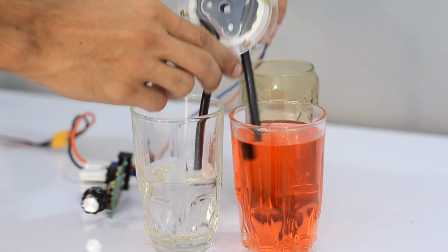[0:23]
In today's project video we are going to build ourselves a peristaltic pump by using commonly available hardware, so that we can reduce its cost and improve its effectiveness as well. So have a look at how cool this little pump is, and later on I'm going to show you how we can build one for ourselves. So let's get into the video.
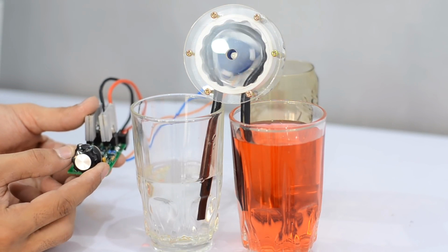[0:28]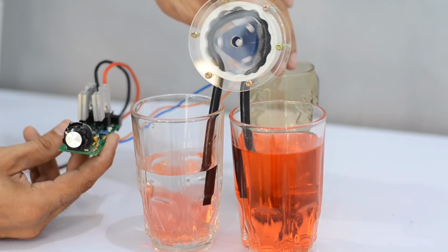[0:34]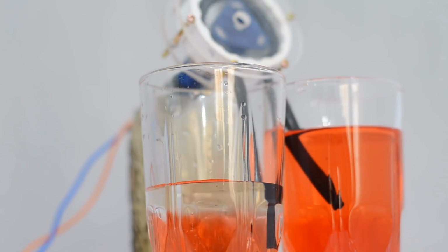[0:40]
A peristaltic pump moves fluid by mechanical constriction along a rubber tube, causing the fluid to flow through the tube. This technique is useful when we need isolation between the fluid and the mechanical parts of the pump. Moreover, the fluid can be pumped in either direction with precise control over the amount of liquid flowing through the tube.
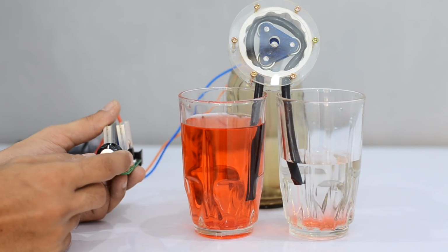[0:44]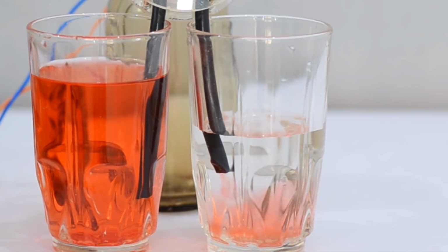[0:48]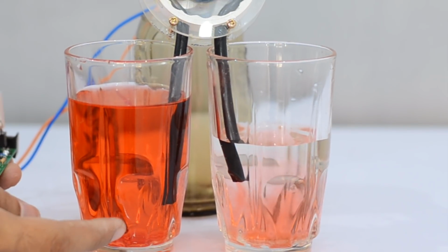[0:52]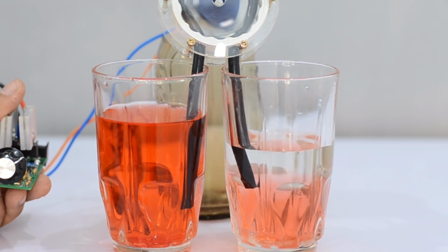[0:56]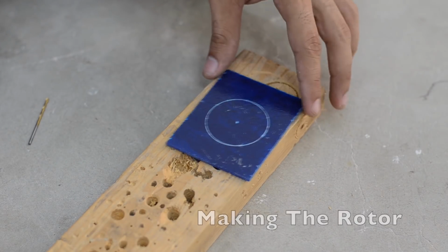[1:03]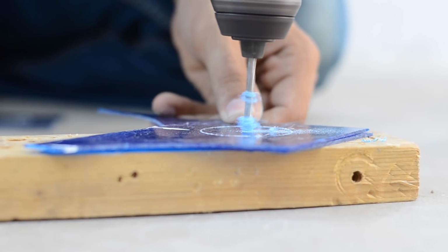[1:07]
I've started by making the rotor using fiberglass sheet. This rotor is going to hold 3 bearings.
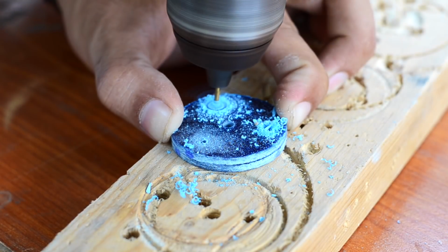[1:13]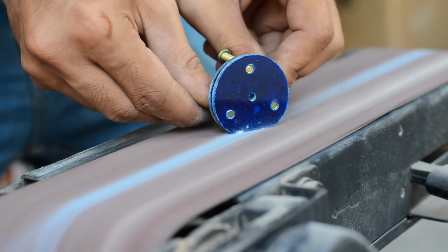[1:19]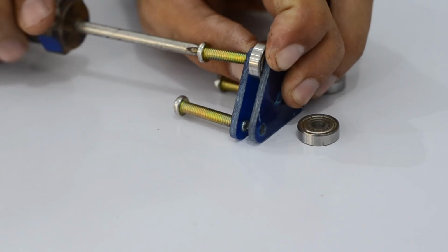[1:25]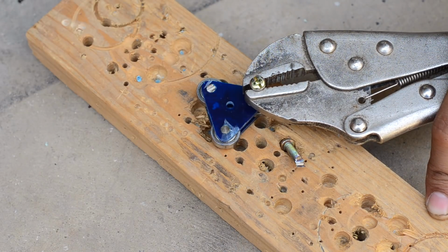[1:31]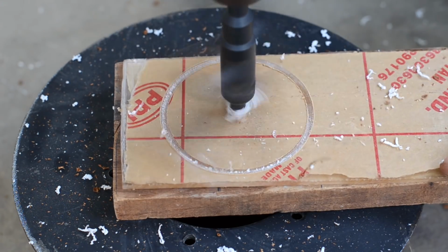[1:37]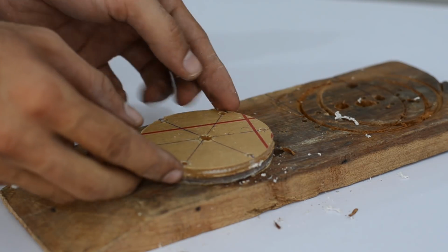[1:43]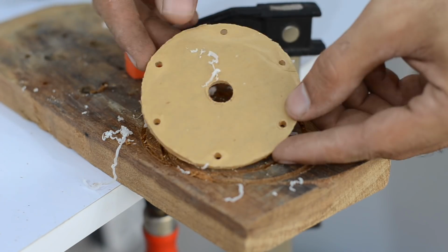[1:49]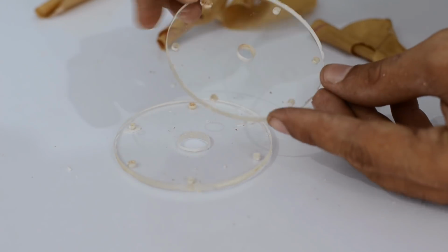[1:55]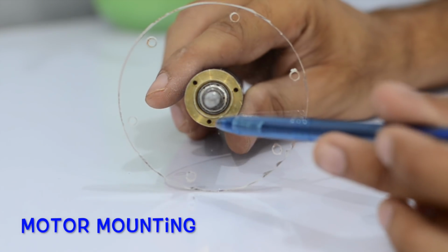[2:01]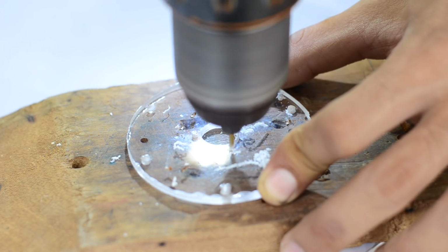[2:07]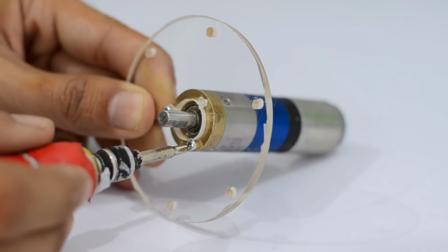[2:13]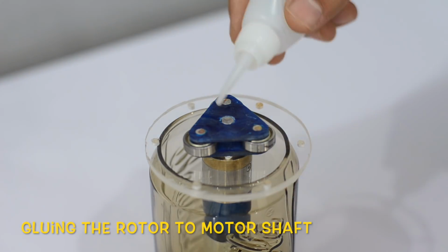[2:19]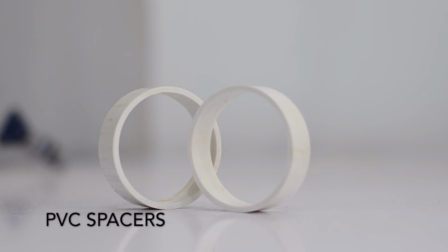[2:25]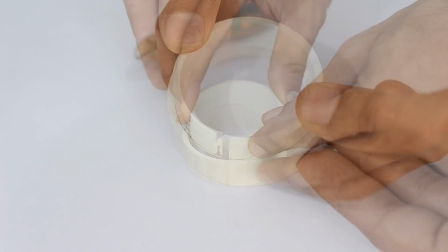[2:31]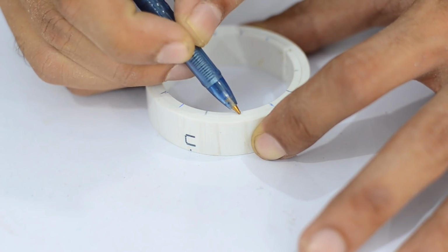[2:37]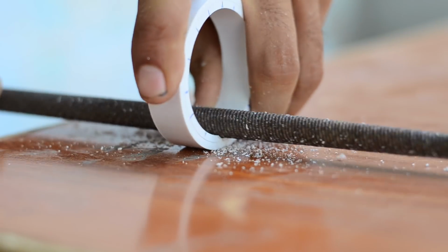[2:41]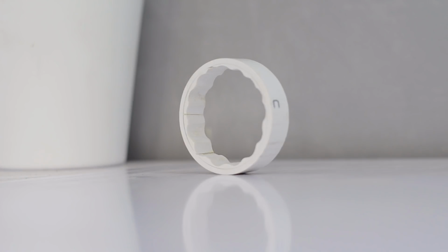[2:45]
To reduce friction between the rotor and stator housing, I've made some grooves on the inner side of the PVC spacers using a file.
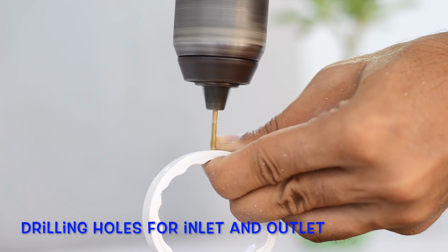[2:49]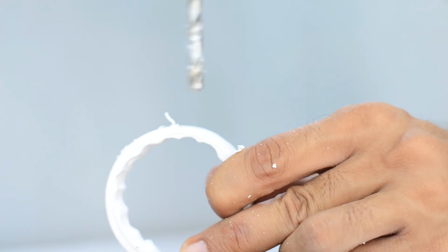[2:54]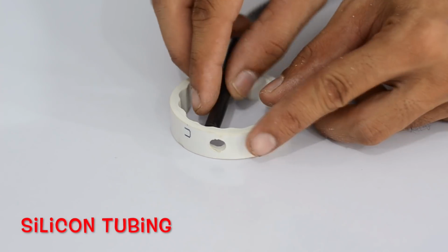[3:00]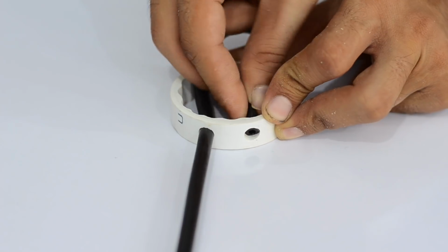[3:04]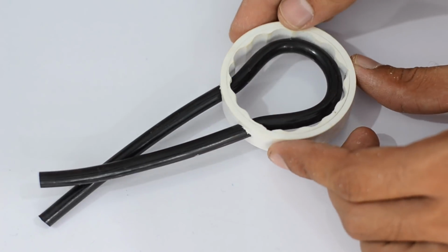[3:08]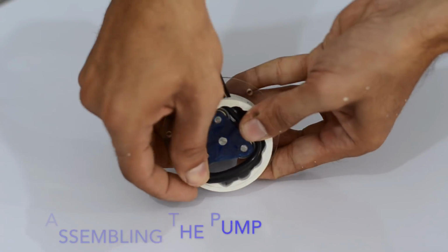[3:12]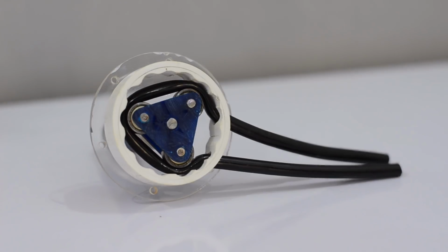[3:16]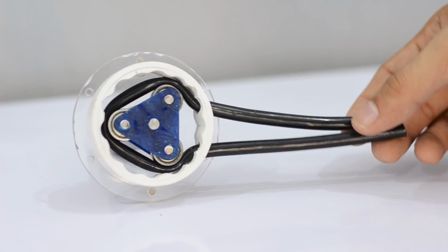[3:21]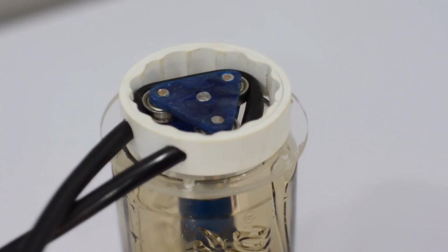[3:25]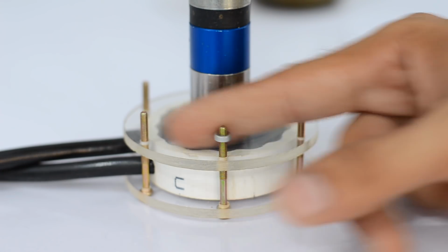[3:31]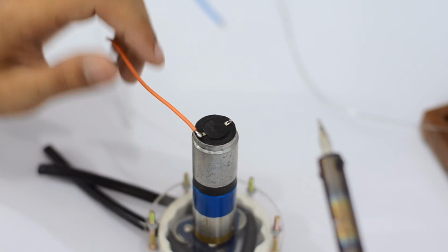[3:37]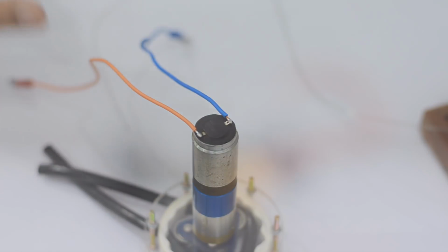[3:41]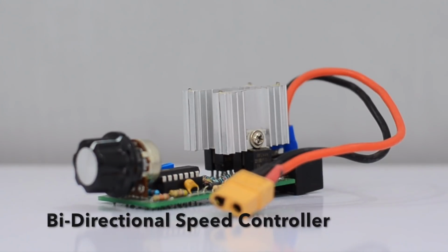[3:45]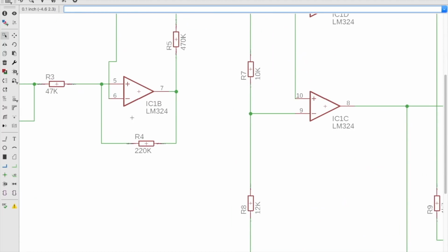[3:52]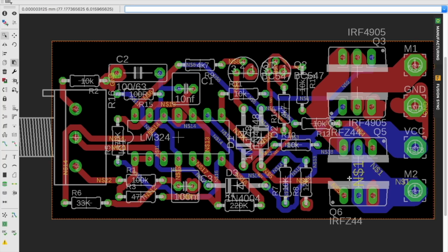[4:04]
To operate the pump in either direction, I decided to build a bidirectional speed controller. I've designed the schematic for a bidirectional speed controller that is based on the LM324 motor driver IC. To drive large amounts of current, I've used N and P channel MOSFETs rather than transistors only. Besides that, to ensure a smooth operation, I've decided to build this speed controller on a printed circuit board rather than building the whole circuit on a perf board.
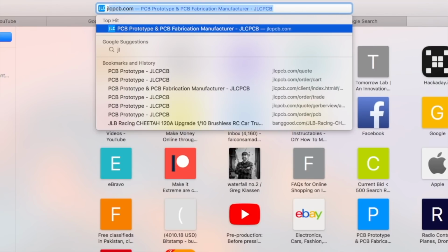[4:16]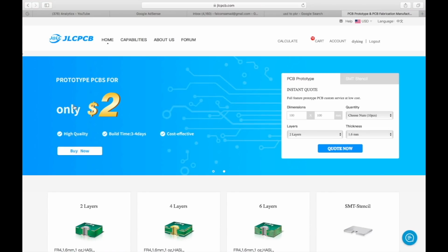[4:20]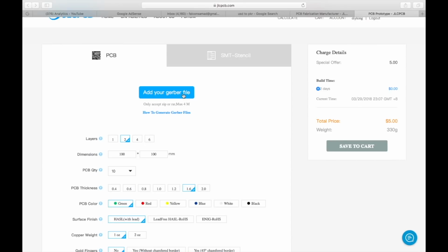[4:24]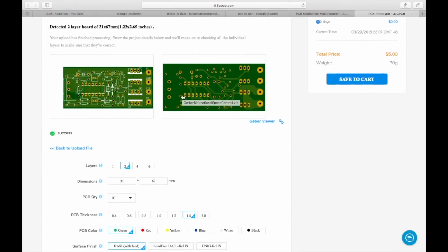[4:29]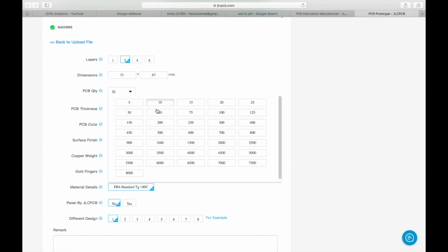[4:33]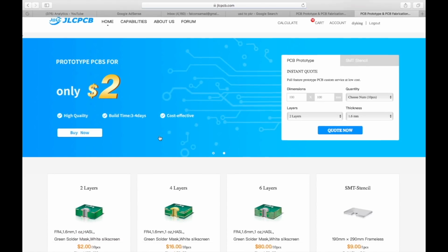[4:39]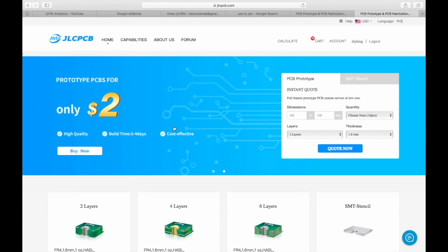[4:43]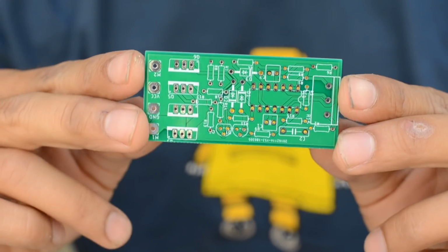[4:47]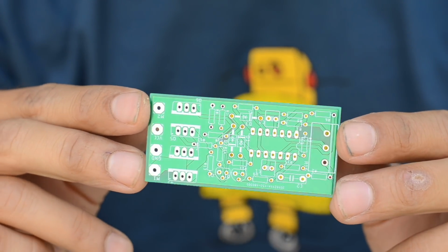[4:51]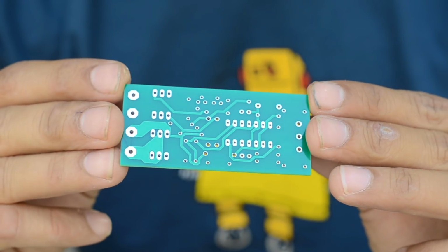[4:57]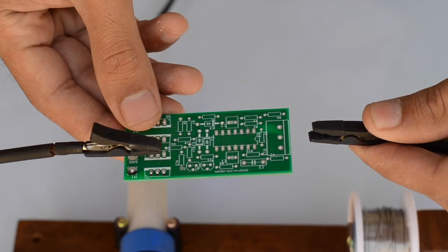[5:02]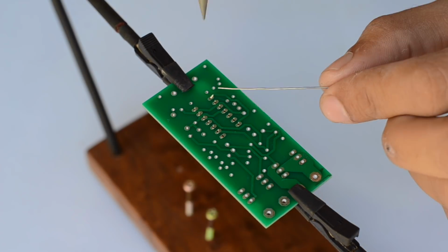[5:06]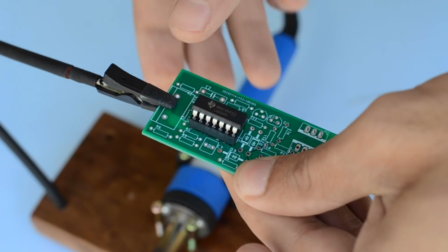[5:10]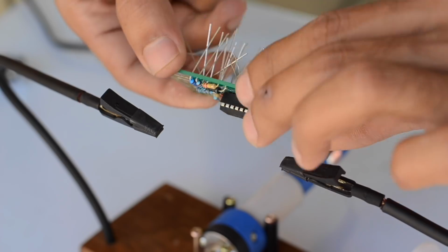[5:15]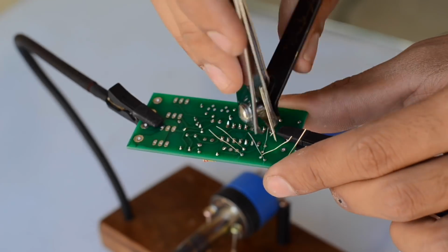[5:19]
Now for more details about this bidirectional speed controller, the list of the components, schematic and the Gerber files for the PCB, have a look at one of my previous videos in which I've shown you how to build one. The link for that video is given at the top right corner of this video. Later, I soldered all the components onto the PCB as shown on the schematic.